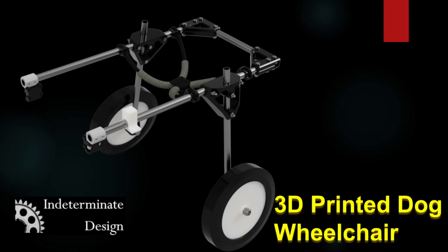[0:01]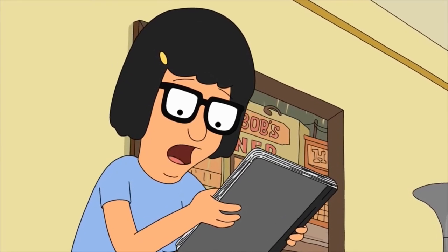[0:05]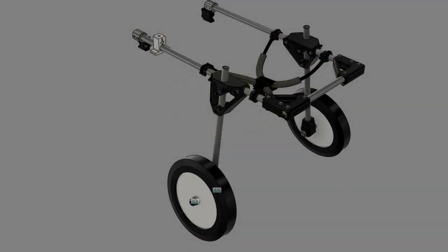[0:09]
Hey everyone, just a warning, this is not my typical content. Non-canonical. Recently, my older dog needed some help getting around, and I had a hard time finding a decent, larger dog wheelchair that wasn't on back order.
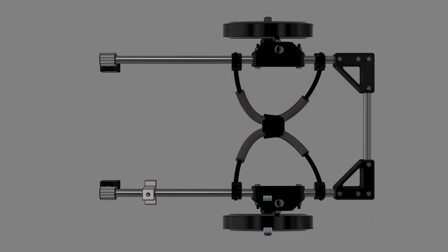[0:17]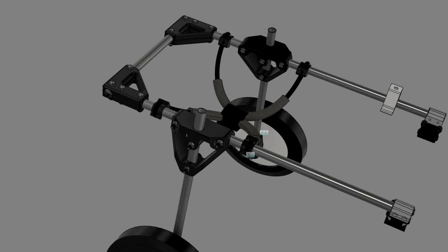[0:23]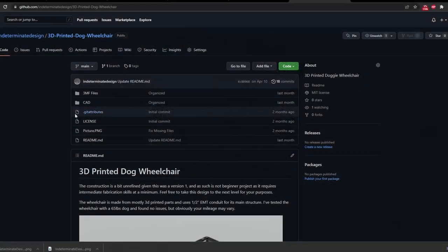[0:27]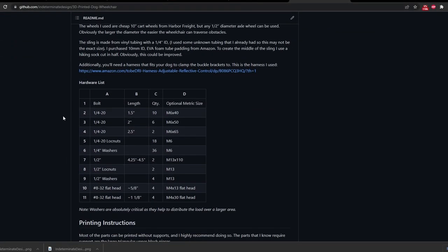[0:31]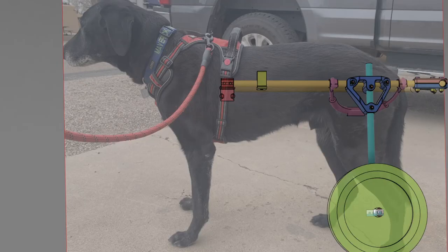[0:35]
This is not a polished project for beginners. You'll need at least intermediate fabrication skills, some power tools, and the ability to modify and make changes to the CAD design as needed for your particular dog. I've put all the CAD and bill of materials out on my GitHub so that you can download it for free. The dog wheelchair concept operates much like a rickshaw cart.
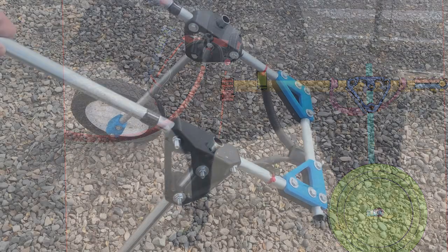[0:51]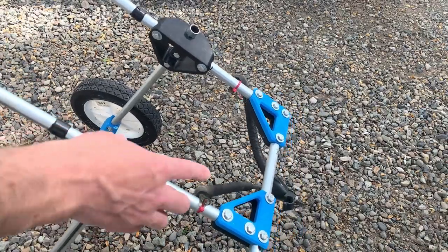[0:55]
The front of the wheelchair clips to a harness with two 3D printed clips. The back has two wheels to support the dog's rear end, and a simple sling harness that goes under the dog's belly actually supports the dog's weight. All the tubing for the wheelchair is half-inch EMT conduit, which is super cheap.
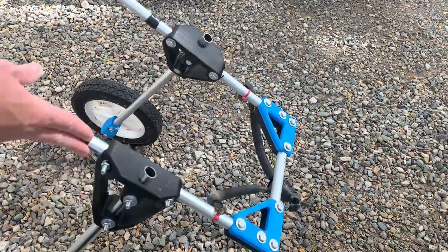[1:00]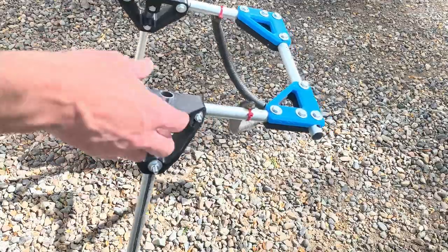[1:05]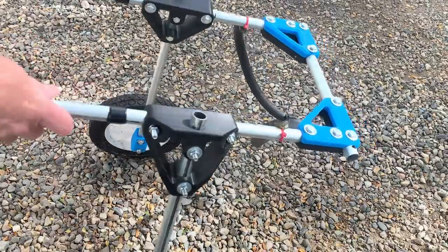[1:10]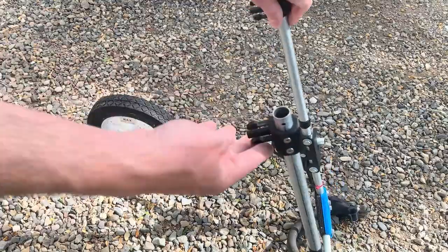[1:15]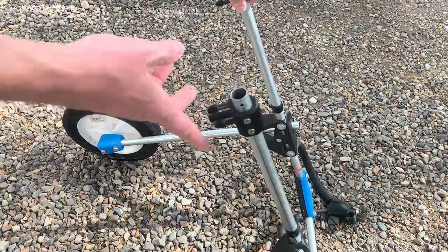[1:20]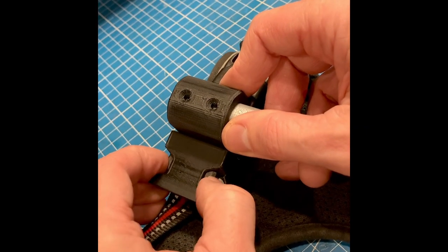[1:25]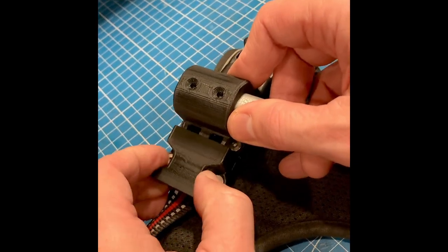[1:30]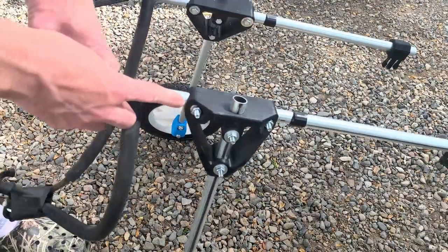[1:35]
I recommend printing all the parts with 6 to 7 walls and 6 to 7 top and bottom layers out of PLA Plus. I initially printed all the parts out of PETG, which works fine, but I later found out that PLA was significantly stiffer and stronger. If your printer is able, I highly recommend printing at least the male portion of the harness clips from nylon. PETG or PLA works in a pinch, but it breaks more easily and it's much harder to unclip because they're stiffer materials.
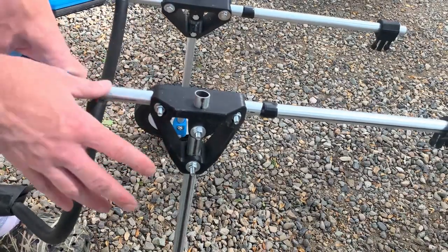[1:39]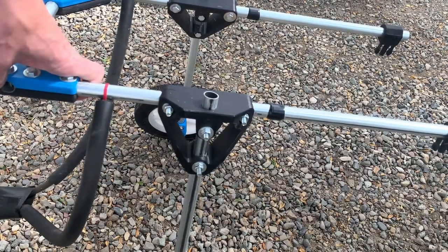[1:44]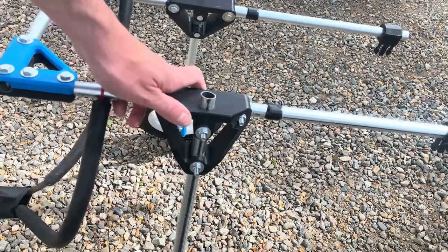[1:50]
Looking at the frame, the most challenging part of this design is that it isn't super easy to adjust as you need to drill holes. And getting the tubing lengths right can require some trial and error. In fact, I ended up drilling so many holes in my first pieces of tubing that I just ended up replacing it with a brand new one once I got the fitment correct.
Our male model here, Maverick, is demonstrating the ideal fitment for the wheelchair. The front to rear, the tube should be roughly level, maybe a little bit lower in the front with the ground, and at the height of the dog's rear hip bone pivot. The upright should be at the rear hip bone pivot level or just a bit in front. The rear bar should be far enough back that it doesn't interfere with the dog's tail and ability to do their business. And the width of the frame is about 1 inch wider than at the dog's front shoulders where it mounts to the harness.
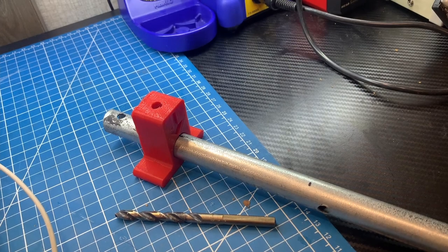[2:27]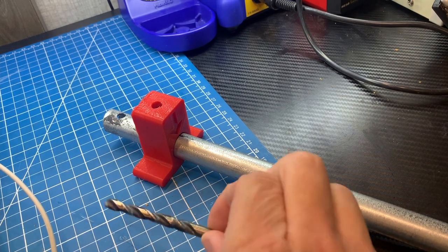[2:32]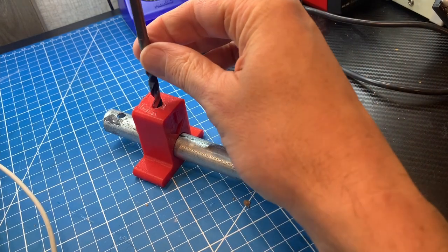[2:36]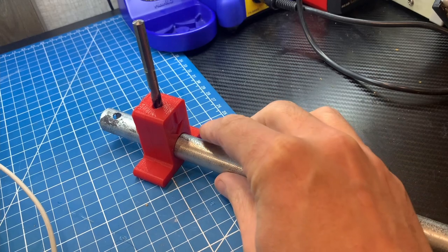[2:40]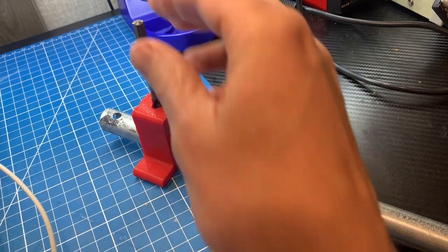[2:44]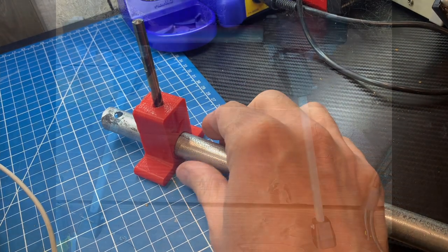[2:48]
If you don't have a drill press, I've included a handy drilling jig. Otherwise, it's virtually impossible to drill a perfectly straight hole through both sides of the tube. To drill holes, I typically put the tubing in the part. I drill a hole through at least the one wall of the tubing and then slip it out and put it on the jig and then drill all the way through to the other side.
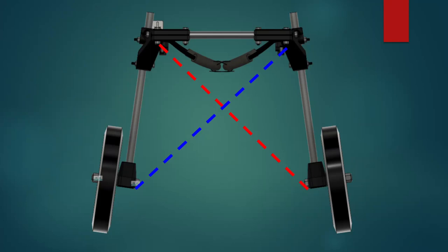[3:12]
One of the more difficult parts of the assembly process is actually the uprights themselves where the wheels mount, which have a 5 to 10 degrees of camber. This angle ensures that the dog's feet can't hit the wheels or the axles, and it allows the wheelchair to pivot more easily. I found the easiest way to do this was to roughly set the angle to one side, mark and drill the holes, and then install the bolts. Then I measured across diagonally to ensure that the second side was going to be at the same angle.
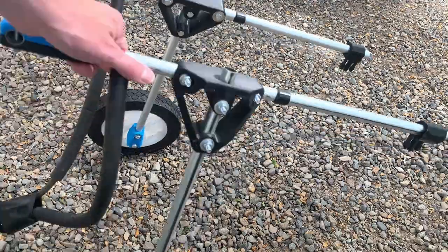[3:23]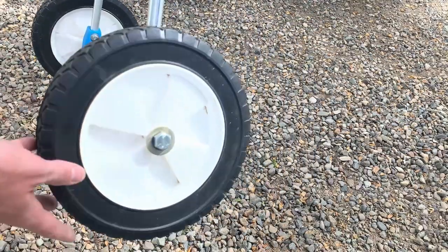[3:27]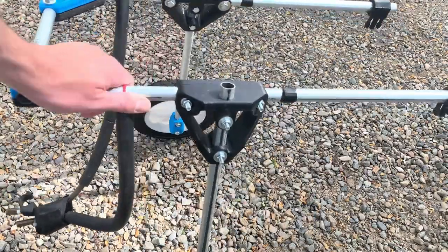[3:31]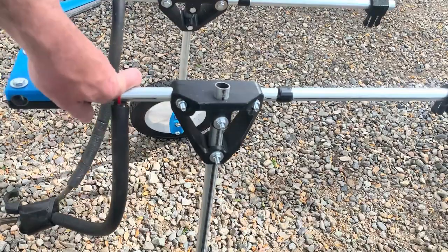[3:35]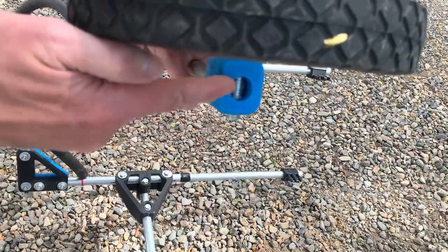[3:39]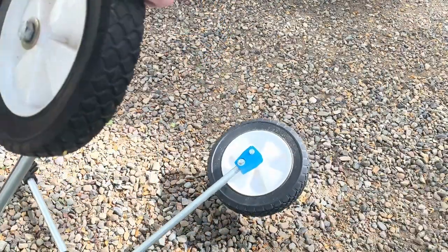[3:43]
Currently, I'm using some cheap Harbor Freight 10-inch cartwheels. They work pretty well, but are a bit heavy. You can use any wheel meant for a half-inch axle. I've actually ordered some larger 16-inch diameter bicycle tires, which will roll over obstacles a bit better. Just a quick note, I have a hole where the tubing can go all the way through the axle mounting block, but you can just leave the tube short of that so that you don't have to try to drill a half-inch hole through the conduit.
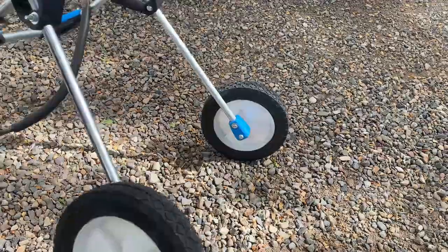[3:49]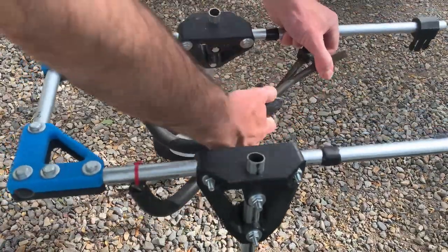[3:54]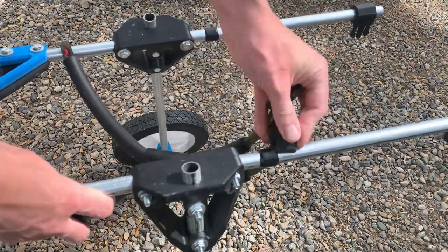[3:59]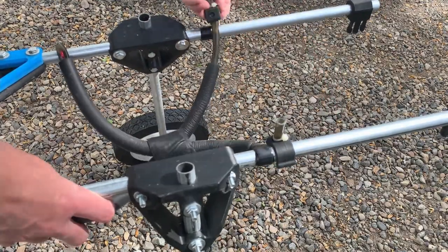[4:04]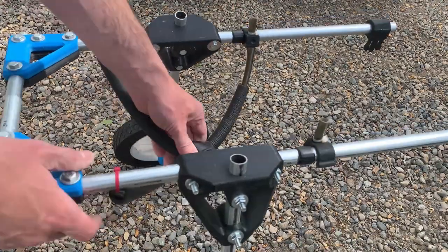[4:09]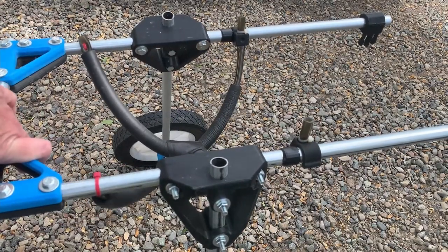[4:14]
Now to the more fiddly bit, the sling itself. This is more of a choose-your-own-adventure. I'm not super happy with my setup, but it works for now. I used some roughly 3/8-inch vinyl tubing that I had lying around. I drilled some holes, and I zip-tied the tubing to the rear. Then on the front, I made two clips out of PETG that the tubing slides into and has a friction fit, and then I used some zip ties just for some extra friction once I got them set the way I wanted. I then used some electrical tape wrapped around the tubing as a stop to keep the clips in place from being able to slide.
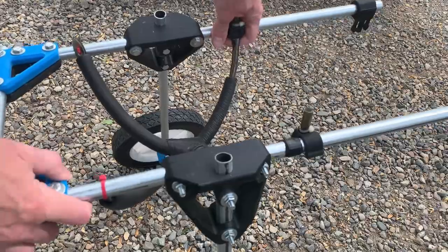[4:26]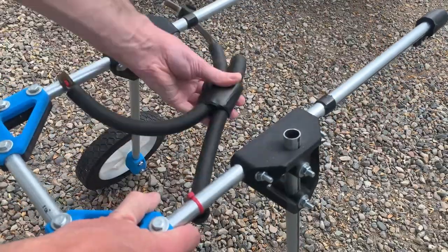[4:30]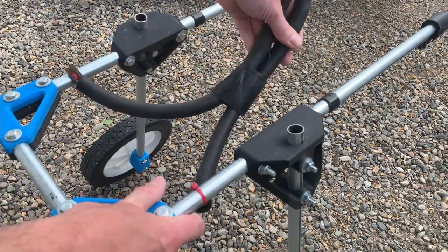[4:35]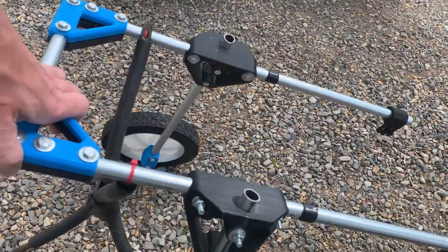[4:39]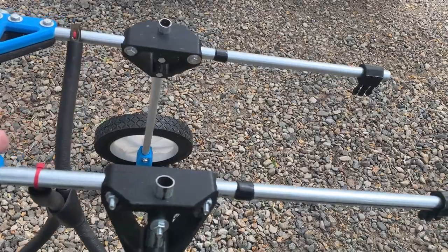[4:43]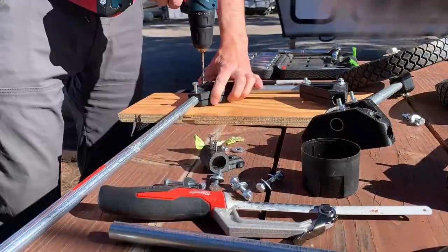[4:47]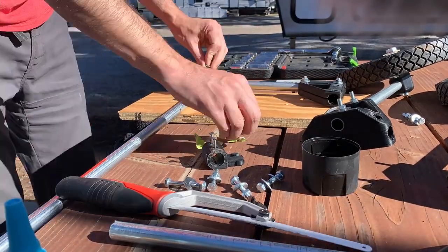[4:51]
An important part of the sling is the webbing in the middle. Obviously, if you can sew or have some old hiking socks, you can fabricate this rather easily. I'm currently using some gaffer tape turned inside out and then wrapped right way around to create a loop. Also for comfort, I've added this foam tubing that I've slipped over the vinyl tubing. I found it on Amazon. You'll find adjusting the height of the sling requires some trial and error, depending on how much weight you need to take off the rear end of the dog.
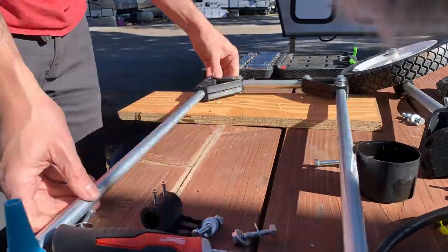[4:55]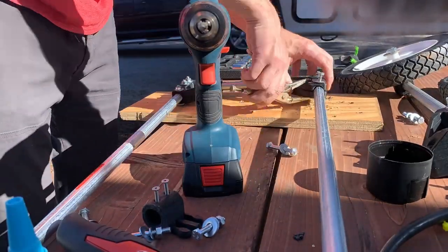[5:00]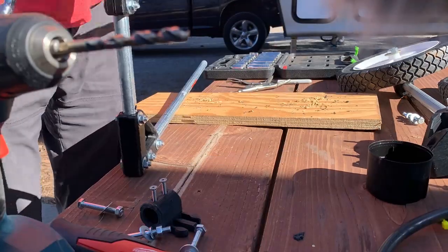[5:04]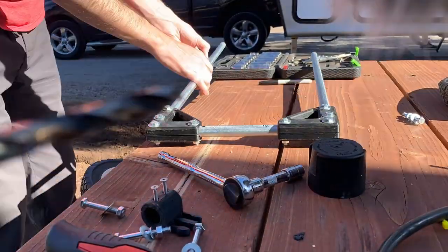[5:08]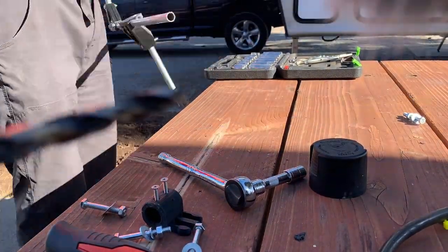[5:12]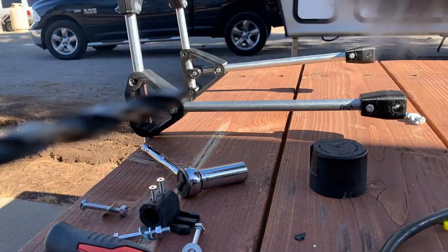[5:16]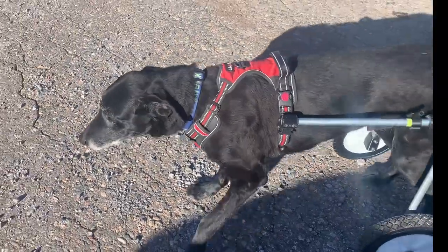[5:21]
So now that you have the wheelchair itself, I highly recommend that you watch some YouTube videos on how to adjust doggy wheelchairs, and more importantly, how to train your dog to use the wheelchair. The dog training part is a tricky business, and be prepared for it to take a couple of weeks. We started off with 1 to 2 minutes per day, and then finally around 2 weeks later, Maverick finally took off and got the hang of it. You really need to make sure that being in the wheelchair is a positive experience for the dog.
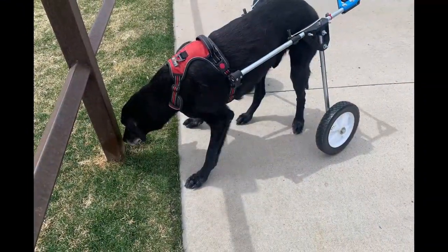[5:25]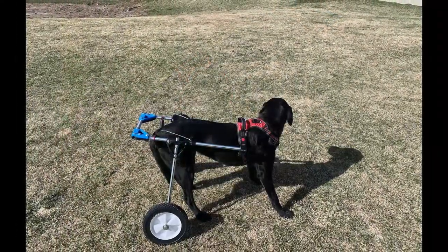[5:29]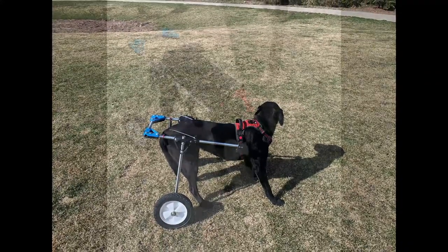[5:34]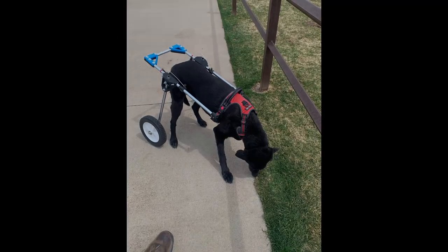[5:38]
Well, that's it. Again, I'm putting this out there with the clear disclaimer that this is a 1.0 prototype design with warts and all. Feel free to ask me any questions you might have in the comments, and I'll do my best to answer them.